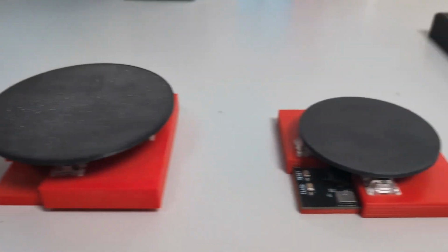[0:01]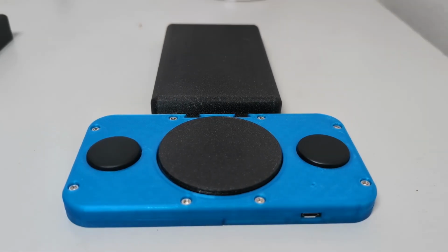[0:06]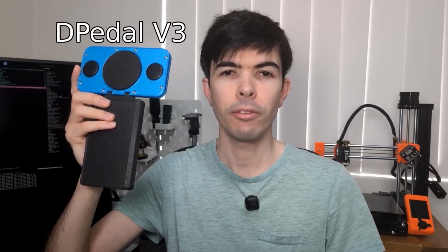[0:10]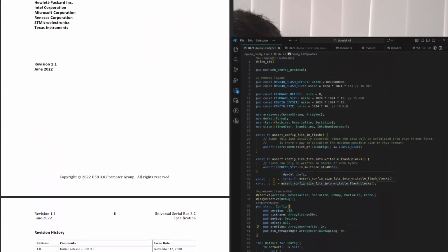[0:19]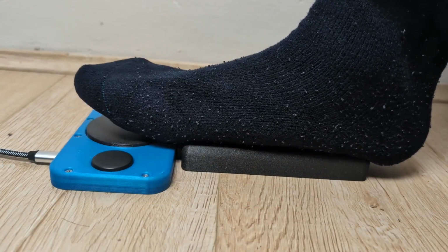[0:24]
This is DPedal version 3, a foot pedal I designed to assist with my repetitive strain injury. I mainly use it for scrolling through documents and code with my feet, as those activities are particularly troublesome for my hands.
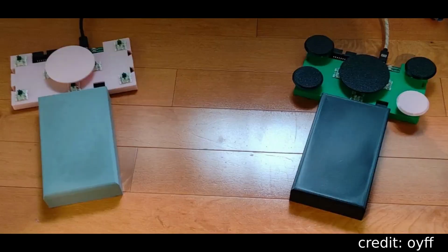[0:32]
The original DPedal is this thing. I used it for years, and someone else even built their own DPedal based on the designs I published. While this original design served me well, it has a lot of problems preventing wider usage. It's expensive, fragile, and a pain to configure.
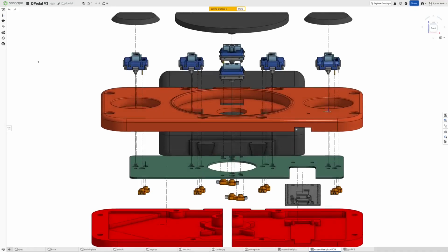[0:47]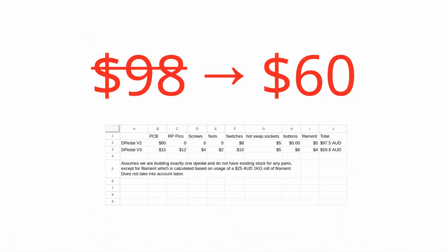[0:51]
To fix these issues, I completely redesigned everything for version 3. Not only does it now cost 60 AUD to build a single unit, down from 98 AUD, but the new design is more robust and easier to use. So let's get into how I achieved that.
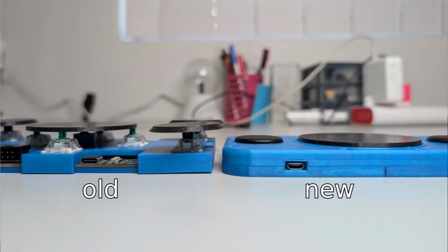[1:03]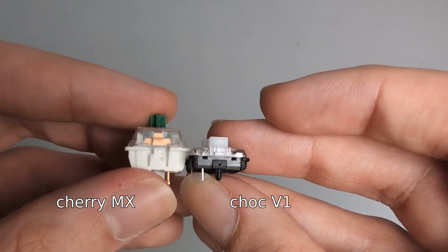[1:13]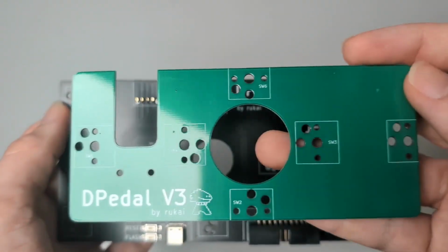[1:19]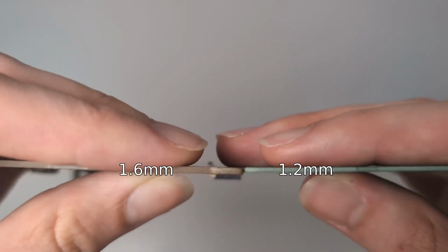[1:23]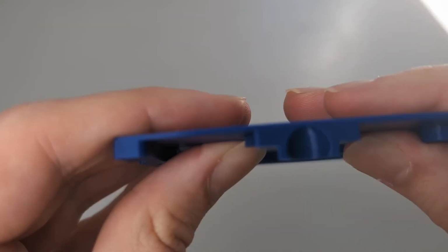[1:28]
Reducing the height of the pedal is a win in every dimension. It's more ergonomic, consumes less plastic, and increases portability. The biggest win was replacing the Cherry style switches with Choc V1 switches. I also realized I can order thinner PCBs. Standard is 1.6mm, but I changed to 1.2mm. And finally, I reduced the height of the bottom part.
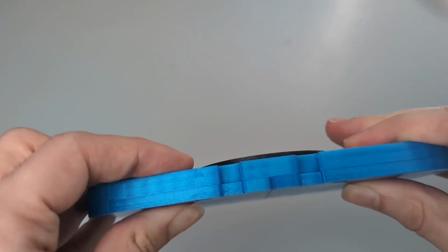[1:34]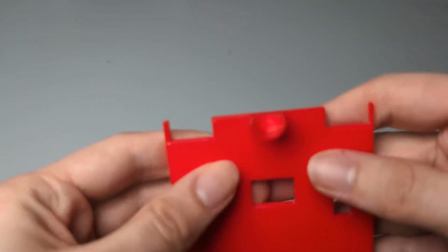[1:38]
The new bottom part is weak by itself, but when combined with the thick top part, the pedal is very sturdy. This approach may sound obvious, but when I designed the original DPedal, I wasted a lot of height by ensuring each piece was sturdy on its own.
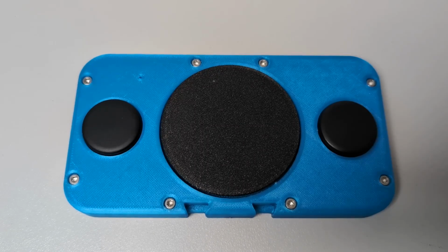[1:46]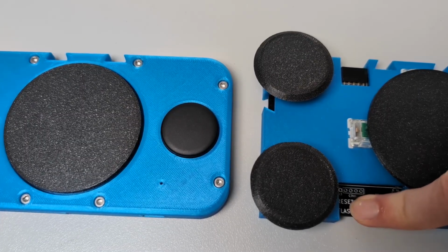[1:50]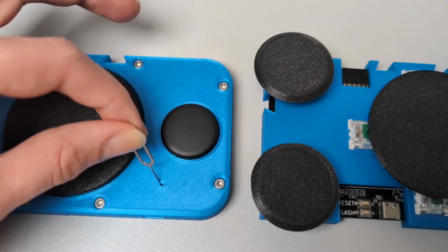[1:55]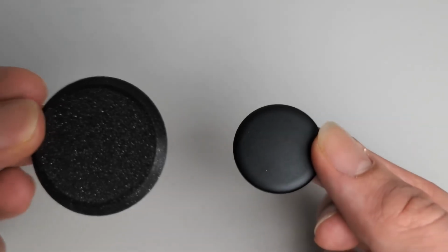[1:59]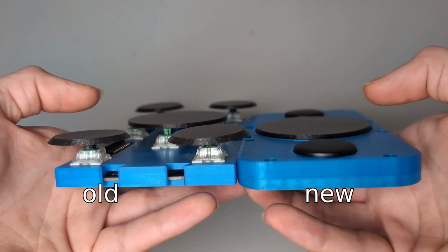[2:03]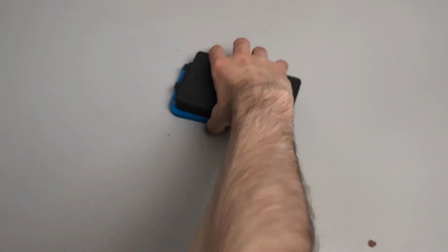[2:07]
Here are some other steps I took to improve the strength. I used screws and nuts instead of a loose press fit. I avoided exposing the PCB, like the old design did. Firmware flashing is now done using a SIM tray opener to press the flash button. I replaced the 3D printed buttons with mass-produced ones, and raised up the top surface to surround and protect the buttons. The pedal is now strong enough to throw in a backpack without worrying about bits snapping off. I actually took it with me on a recent work trip.
The original DPedal design relied on PCB assembly performed by a manufacturer. This is expensive as the assembly process has a large setup cost and so requires large orders to do economically. Previously, the minimum order was $80 for 5 PCBs, of which 2 are assembled, and the remaining 3 boards were useless, as the components were too small to hand solder.
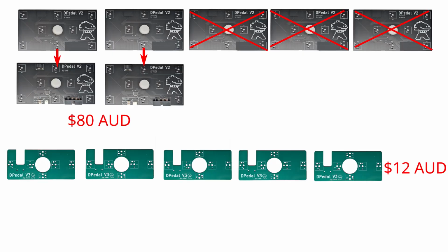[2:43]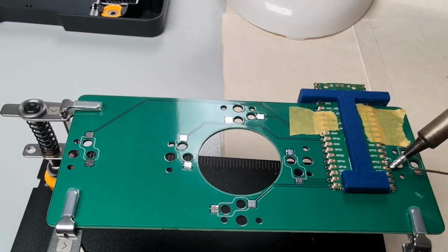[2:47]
The new design still uses a PCB, but skips the assembly stage of manufacturing. Instead, we buy 5 PCBs for $12, and a single Raspberry Pi Pico for $12. Then we solder the Pico to the board. This is much cheaper.
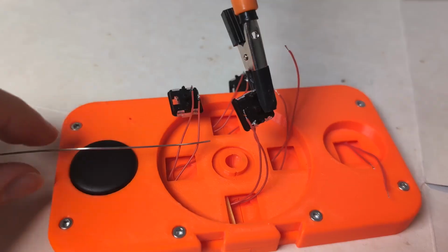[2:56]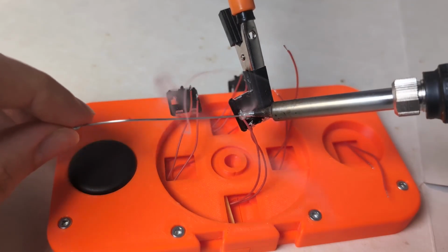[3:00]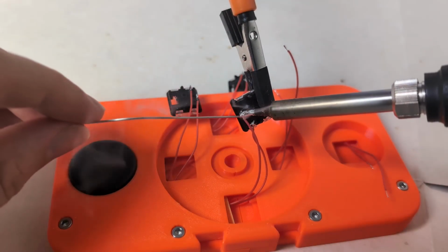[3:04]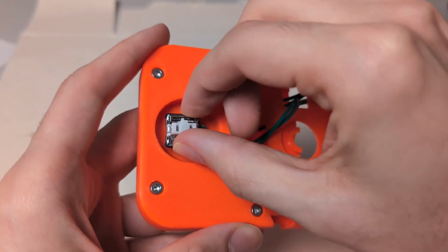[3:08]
If you live in a country where you cannot cheaply buy PCBs, you can always directly wire up the components to the Pico with 30-gauge wire. But that is pretty fiddly, so if you can, I recommend using a PCB. I originally tried this with wire much wider than 30-gauge, which I had to abandon as it didn't fit.
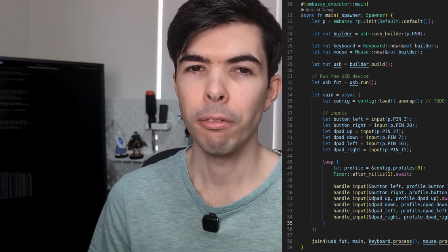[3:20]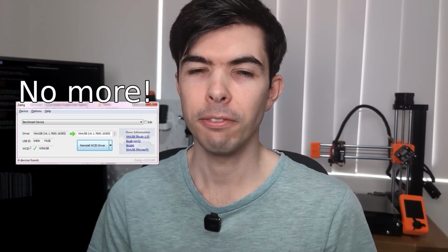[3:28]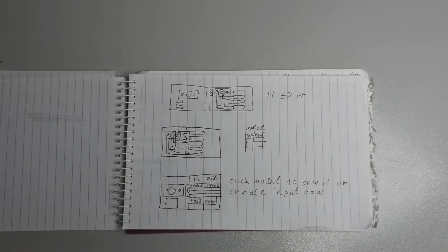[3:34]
I'm really happy with all of these hardware changes, but the software still needs a lot of work. I quickly wrote a basic firmware using the Embassy Rust embedded framework to prove the hardware works. But I didn't want a repeat of the old situation where configuring on Windows requires fiddling with USB drivers. So I sketched out some designs for a web-based configuration GUI and then started hacking away. While there's still more features I want to add, at this point I have an MVP I'm comfortable with shipping.
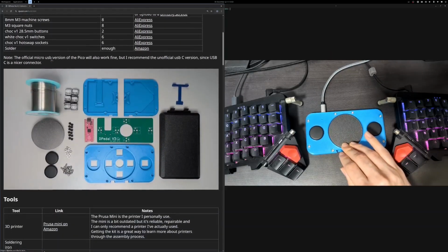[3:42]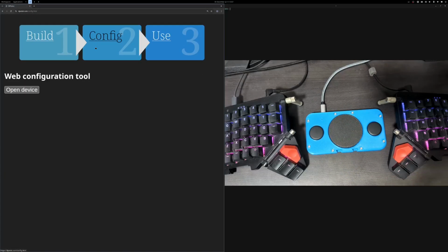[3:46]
This new tool can configure the DPedal to make any mouse or keyboard input without any special drivers, just by visiting the DPedal website. Here I'm setting the up and down buttons to A and B.
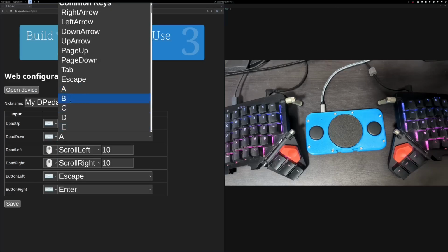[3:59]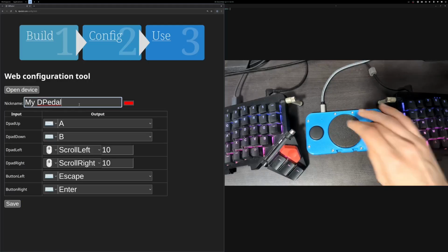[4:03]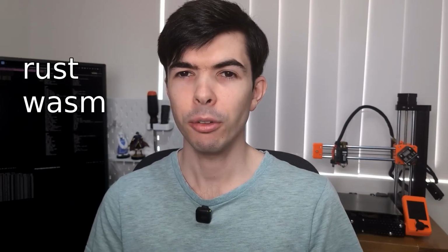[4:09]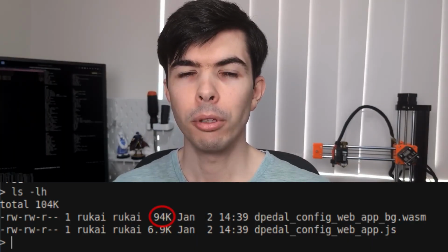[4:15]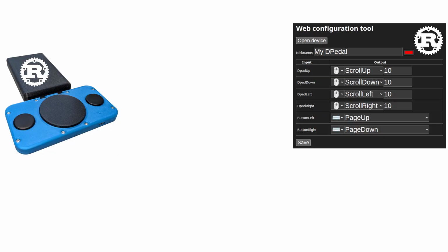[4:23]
The web configurator is written in Rust, compiles to WebAssembly, and uses the relatively low-level WebSys bindings. I wanted to avoid pulling in a large GUI framework to keep the binary size and therefore load times small. Using Rust for both the device firmware and the web app means I can share the same config type definitions between them both, which is super cool.
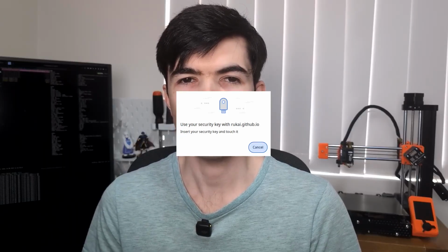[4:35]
In a previous video, I talked about using the FIDO protocol to support communication with any browser. But it has some weird UX consequences, so I chickened out and went with WebUSB instead, requiring Edge or Google Chrome. Okay, but what does it actually look like?
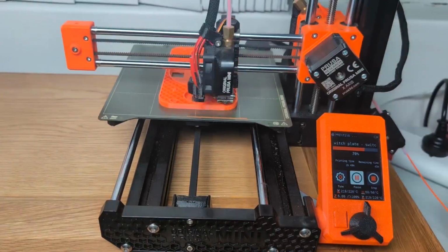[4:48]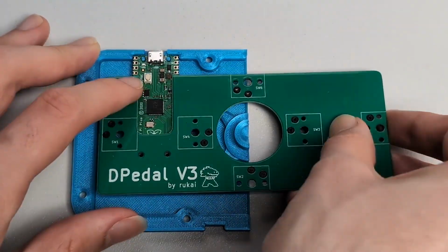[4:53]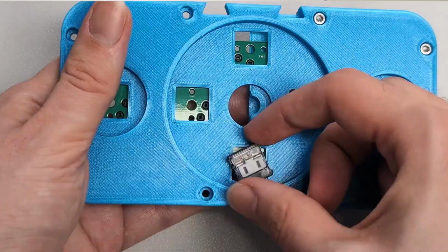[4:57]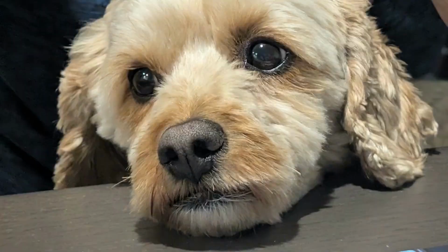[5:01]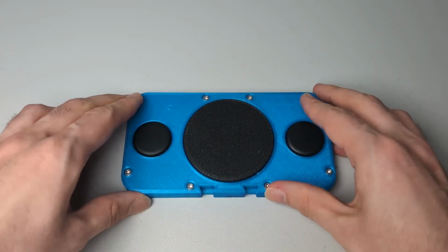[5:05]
To build a DPedal, the steps are: print the parts, solder the sockets and Pico to the board, place the PCB between the bottom and top, screw them together, push in the switches, secure the D-pad, pet your dog, push in the buttons, and done. But that's just a summary.
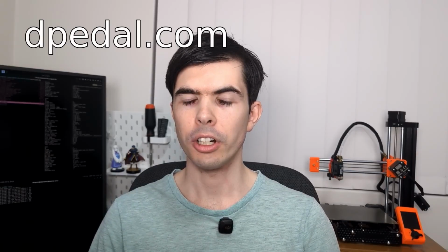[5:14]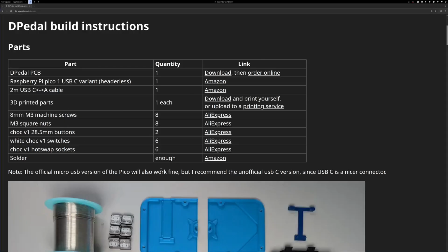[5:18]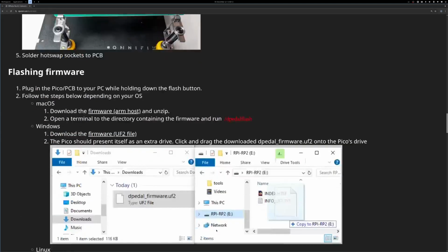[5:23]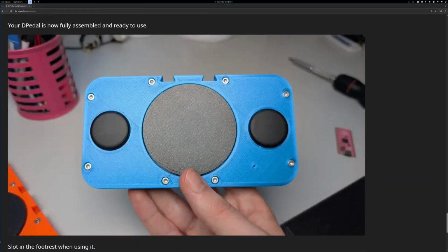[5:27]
If you want to build your own, you should check out the full build instructions at DPedal.com. This includes the parts to buy, the parts to print yourself, and how to solder and assemble them together. The guide is aimed at beginners and doesn't even assume you own a 3D printer.